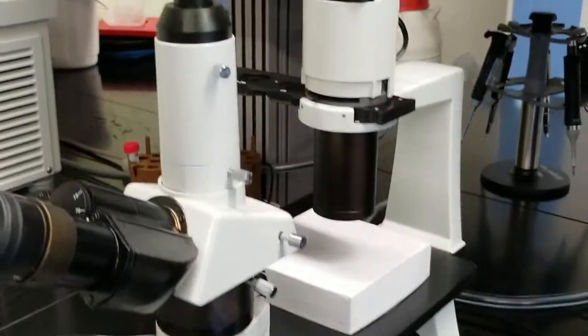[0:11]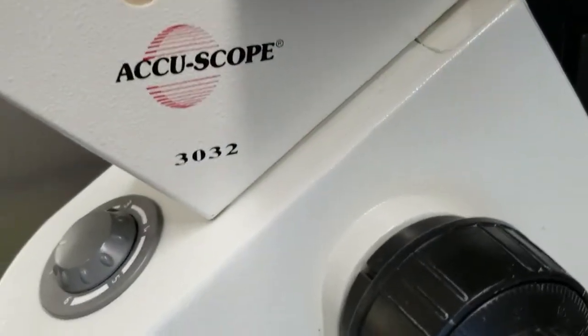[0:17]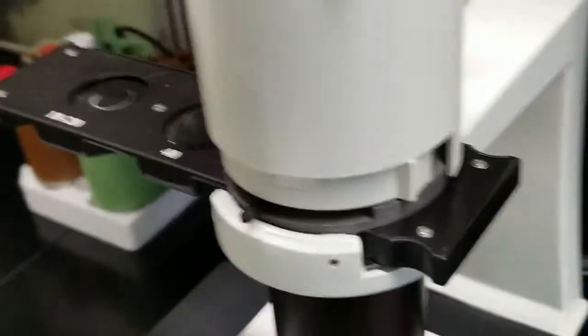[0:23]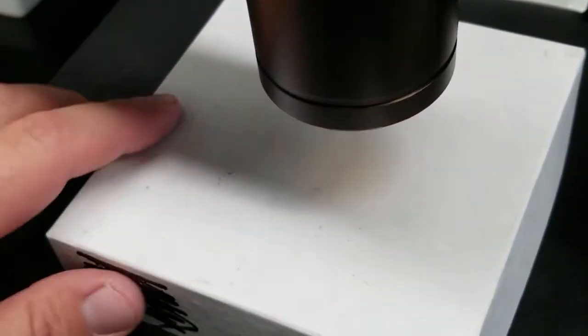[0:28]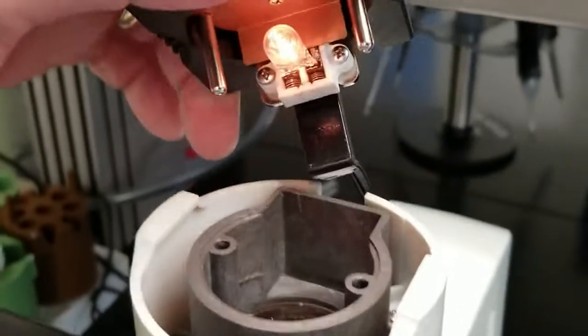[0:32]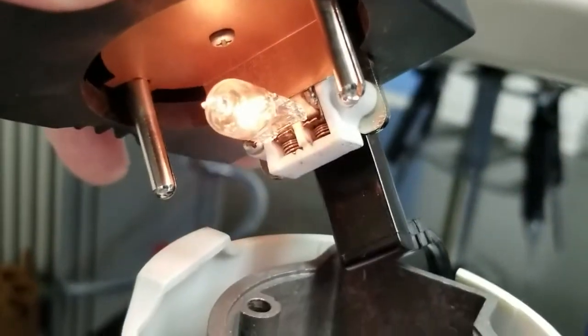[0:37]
We'll go ahead and turn it on so you can see how weak the halogen bulb is. That hasn't always been the case, but you can barely see any light shining on this white box right here. And we'll just open up the top here, just to show you how dull it is. That's what we're going to fix in this video, so let's get started.
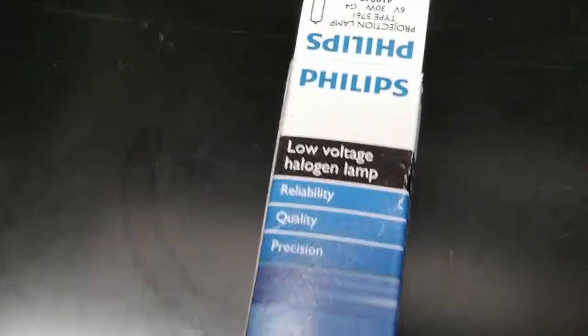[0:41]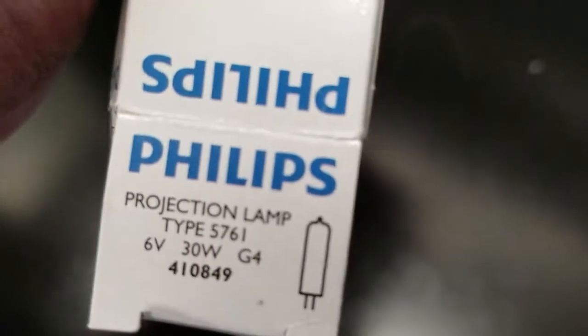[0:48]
I almost forgot, I want to show you the bulb that we're using in this microscope. It's the Philips brand 6-volt halogen bulb, and that's currently what's in the microscope, but let's go ahead and put that LED in there.
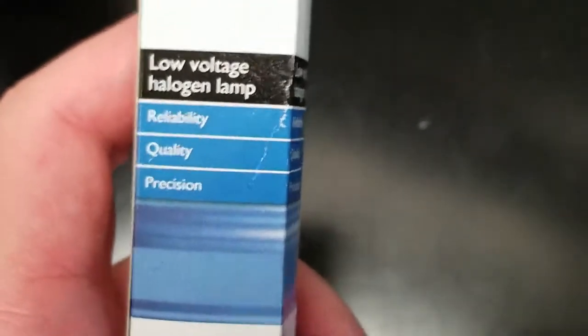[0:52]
This microscope has a halogen light bulb in the top of it. And as you know, halogen light bulbs get very hot. In fact, it was left on for a prolonged period of time, maybe overnight, I'm not sure, but it melted the components and even the soldering joints and the light housing up top. To make a long story short, it's not under warranty anymore. We're not shipping it back and paying for shipping and labor and a new light bulb.
We're going to fix it ourselves, and we're going to use a 12-volt LED light bulb with a 30,000 hour lamp life. And it's a pack of 10. We're going to try it out. It's low temperature. It's very bright, just as bright or brighter than a halogen bulb. So we're going to try it out and see what we can do on the cheap.
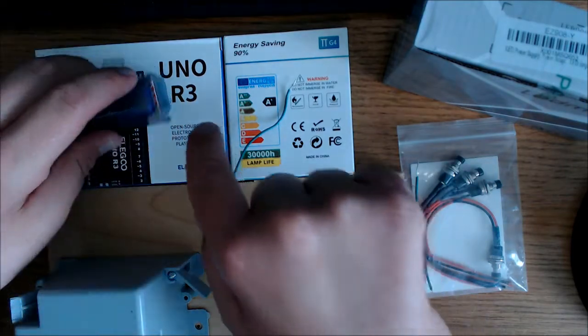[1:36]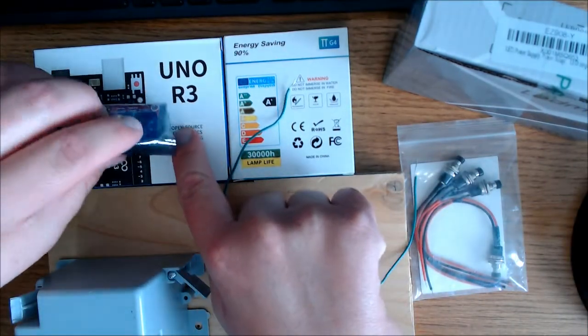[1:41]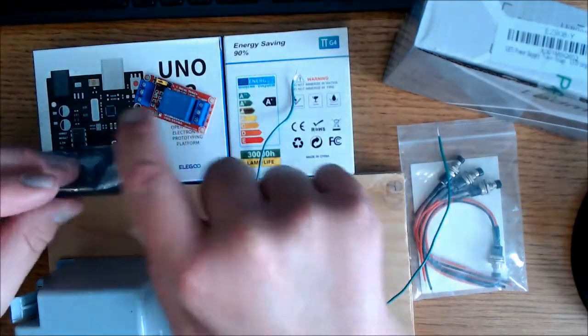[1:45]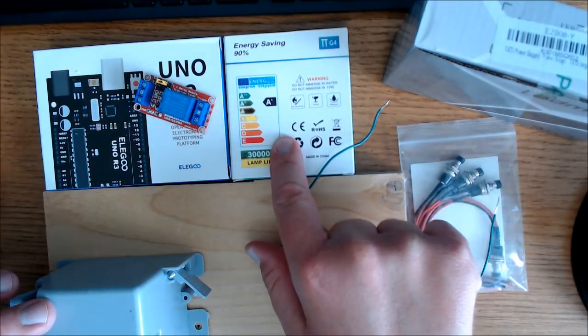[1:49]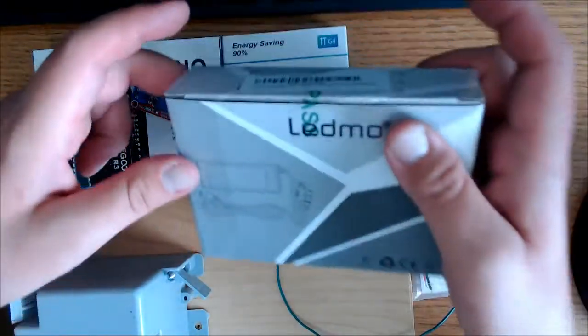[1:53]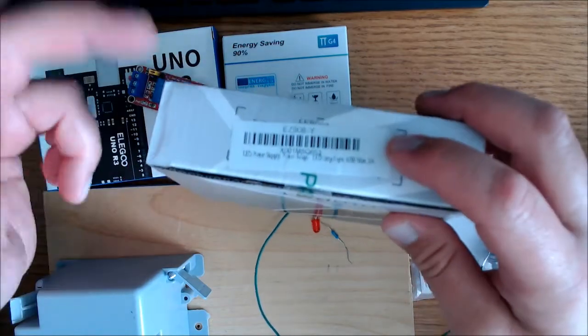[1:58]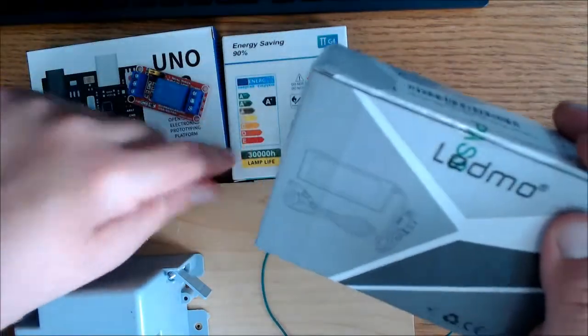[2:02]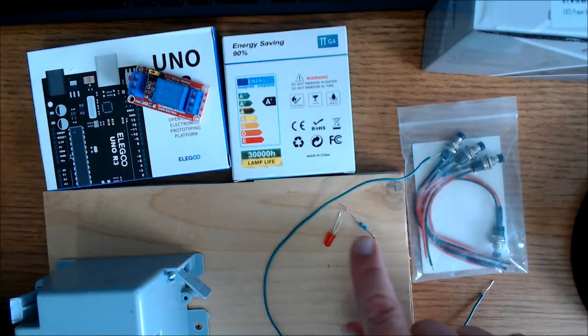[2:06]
In this project, we'll be using an Arduino Uno or Elegoo Uno. We'll be using a single channel 5-volt relay. I've used those before. And we'll be using 12-volt LED light bulbs. And we'll be using a 12-volt power supply, one that I can plug into the 120-volt wall outlet and then convert to 12-volt. It's pretty nice for my light. We'll be using a push-button switch and a 220-ohm resistor with an indicator light. That's just a red LED. And for the final project, connected to the Arduino, we'll be using 22-gauge copper wire.
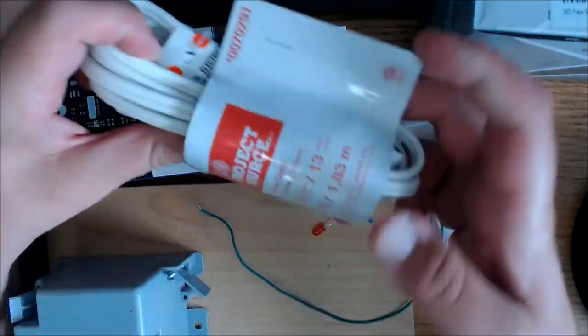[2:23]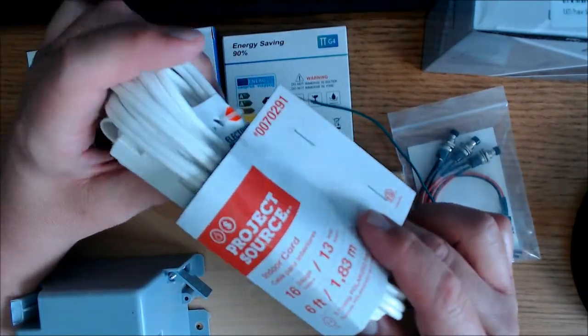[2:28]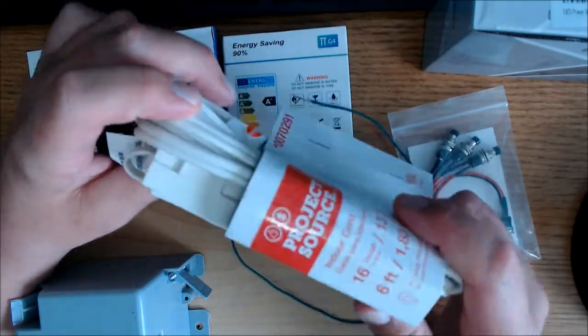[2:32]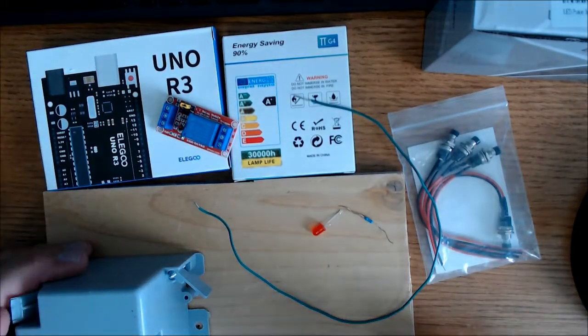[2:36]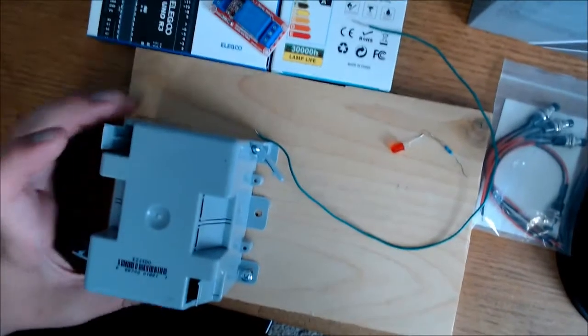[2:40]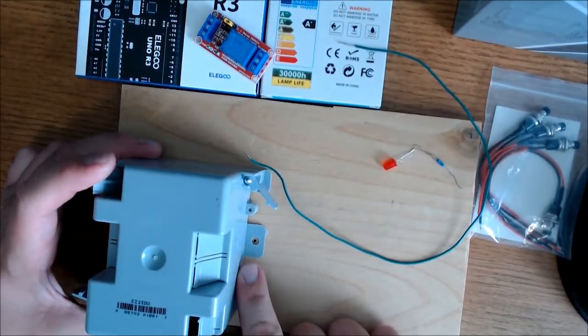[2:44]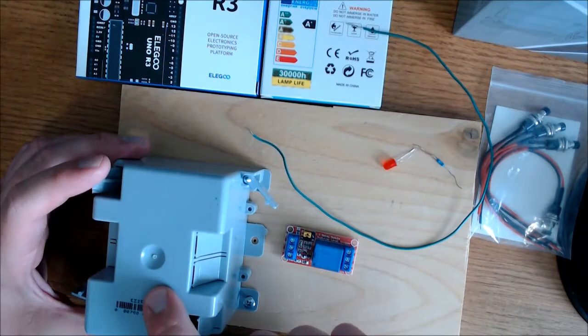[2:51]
We'll also be using this extension cord. This is just a regular extension cord that you can plug into a 120 outlet. We'll use that with the relay. And I'll mount this just on a piece of wood, like I normally do. And I'll be using this junction box right here. And I'll put this under the junction box just so no one gets hurt, no one touches it. This was pretty cheap. It was like $1.90 at Lowe's.
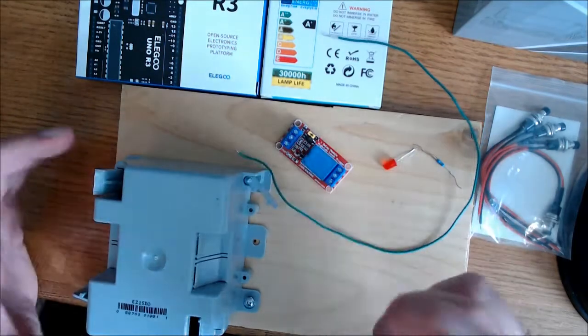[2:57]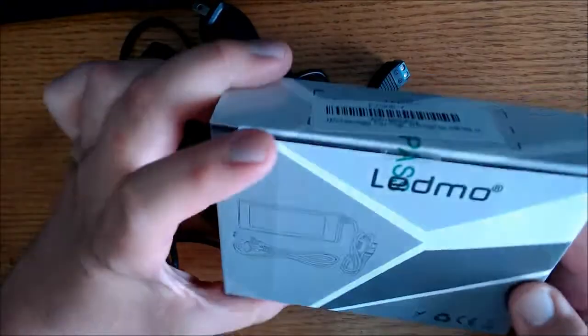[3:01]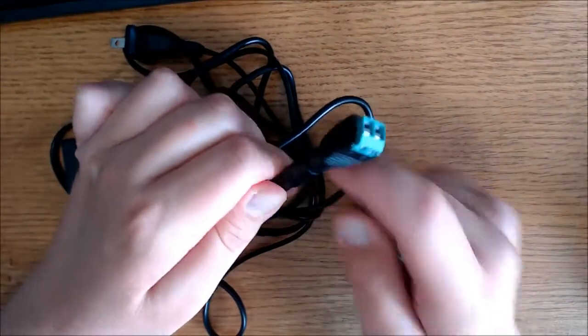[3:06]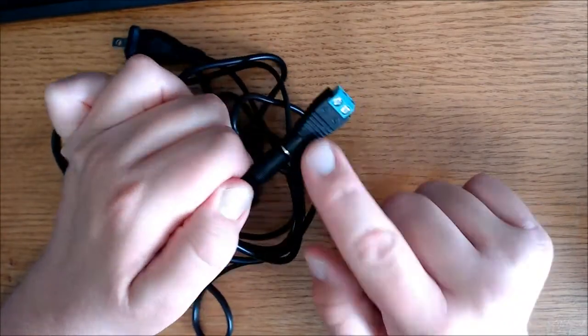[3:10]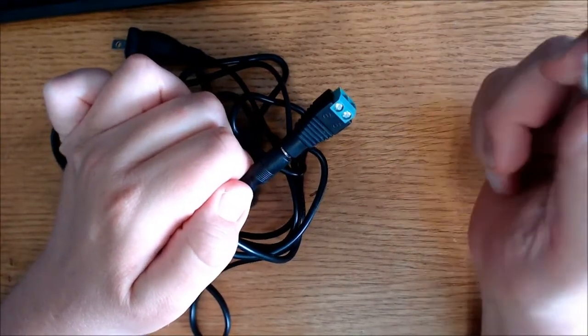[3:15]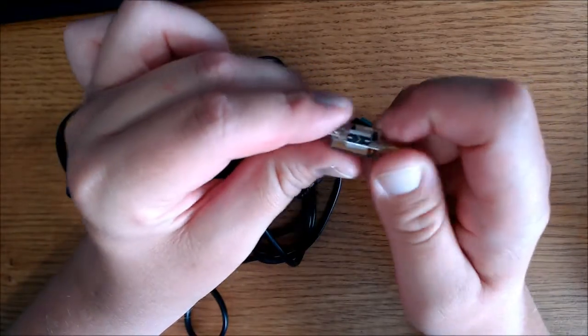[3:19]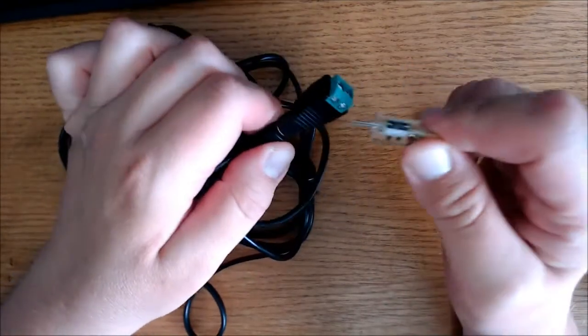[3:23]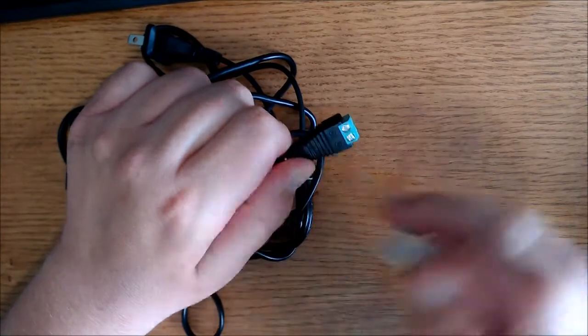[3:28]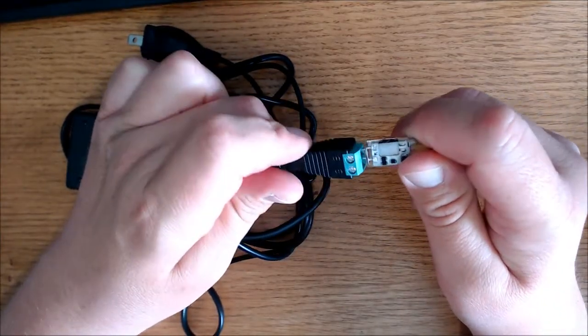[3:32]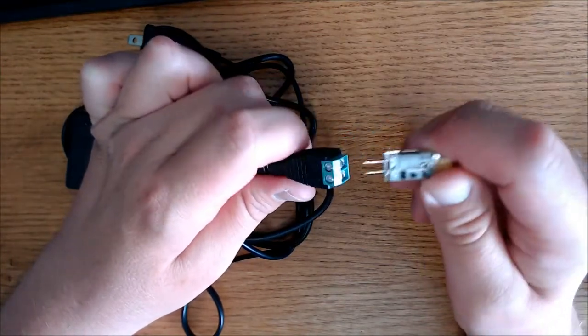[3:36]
Safety first, right? Anyway, I've never used one of these types of adapters before that I got online here, and the end of the adapter has a little port for the leads. And you just match up the polarity. This is my 12-volt LED light, and it tells you that it's negative right there, so that one's negative. You just match it up to the polarity on here. It says that this one right here is negative. You stick it in there and you screw it down and it'll clamp it in there. That is pretty easy. That'll be very easy to remove and replace. So I like that. It's very nice.
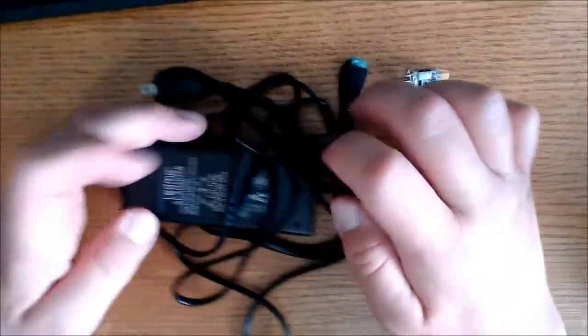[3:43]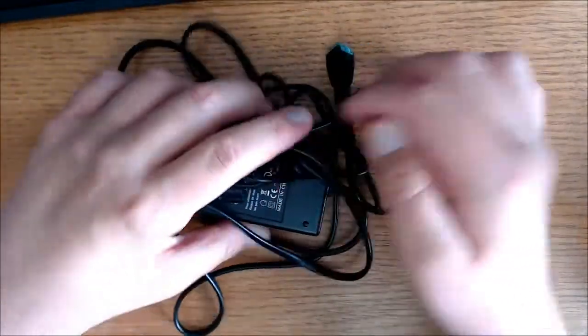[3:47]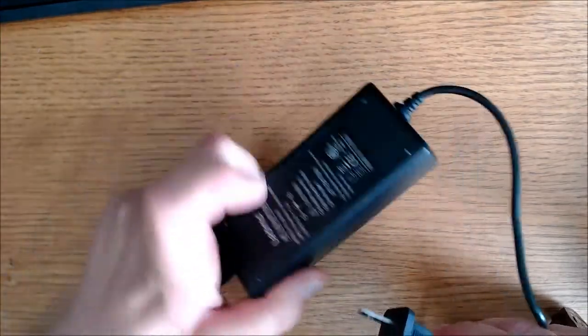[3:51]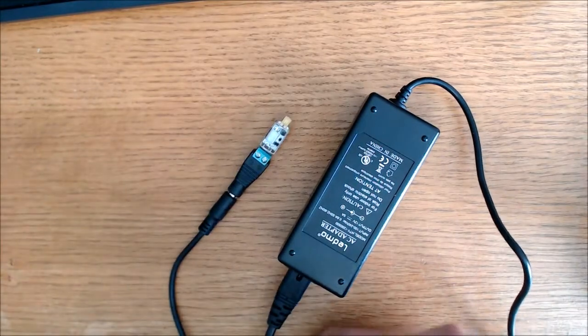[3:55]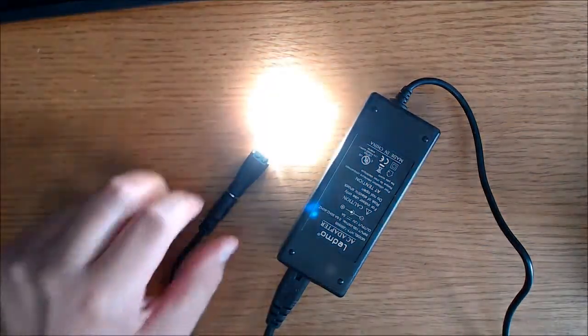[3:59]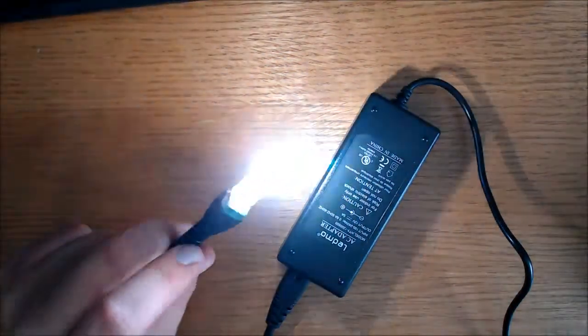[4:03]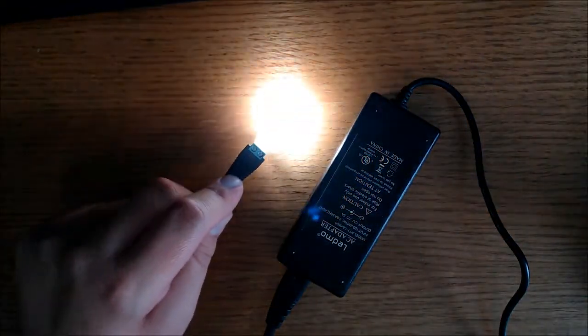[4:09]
And like I said, you plug this end into the 120 outlet and it converts it to 12 volts. There's no on-off switch with this. So you just plug it in and the light comes on, so that's what we'll do here. Just plug it in, just see how bright it is. That's very bright. That will work nicely. I don't think the camera does it any justice, but it is very bright.
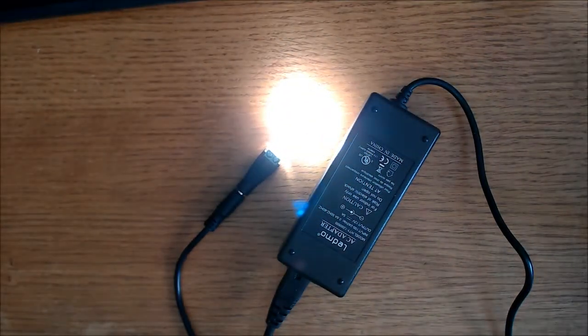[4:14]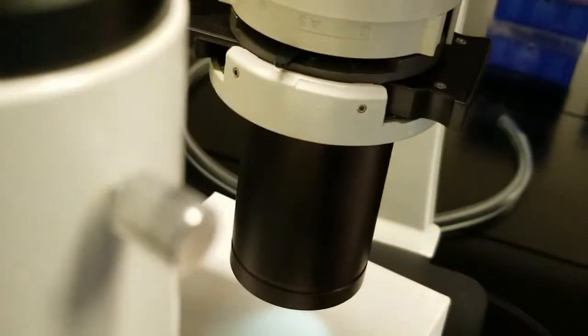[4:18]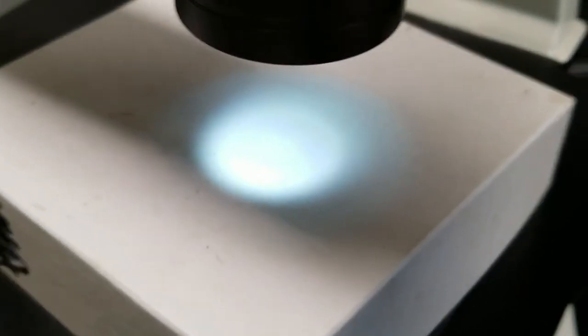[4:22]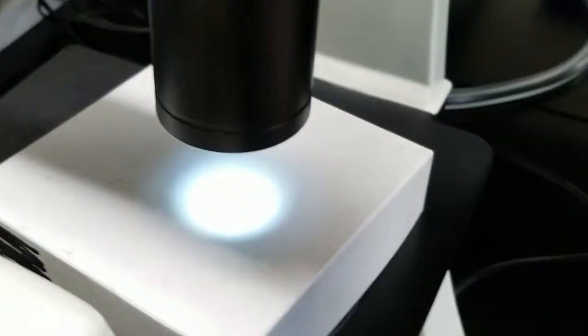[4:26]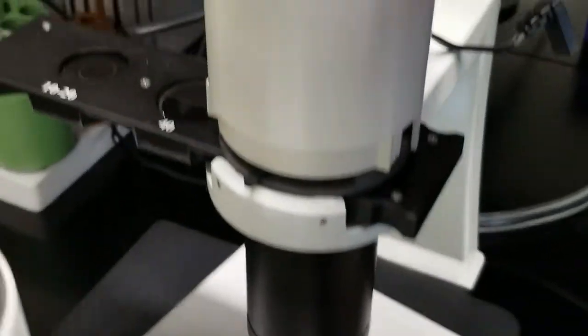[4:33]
I wanted to go ahead and see if this light was going to be bright enough for this microscope. So I went ahead and put it in the top here. You can immediately tell that circle there is way brighter than the halogen bulb was before. We're going to put it in the top of the microscope, and we'll put a temporary cover on the top. Ideally, we'd want to 3D print a cover to go over that and hold the light, but we'll make do with something temporary. I think this is going to be a great fit.
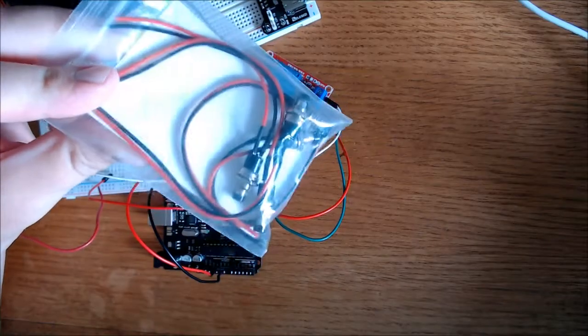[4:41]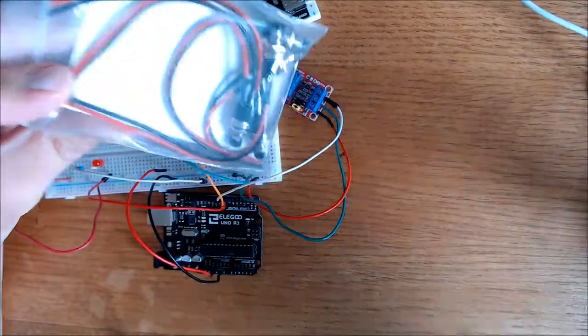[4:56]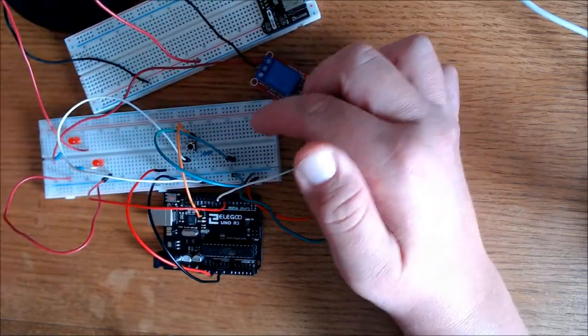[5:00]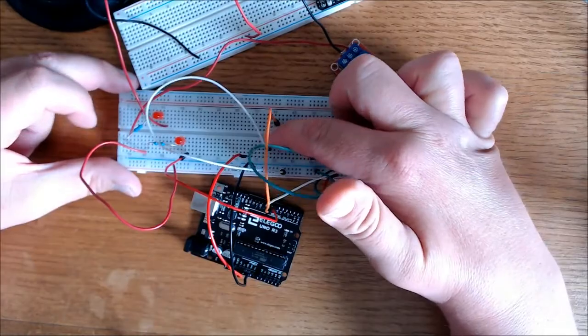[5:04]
Well, it turns out these switches didn't work for me at all. If you look on here, it says that they are normally open, and they aren't. In fact, they're normally closed, because the only way I could turn the light off was to depress the button. So these were not working for me, and I had to resort to one of these micro push buttons here, as you can see.
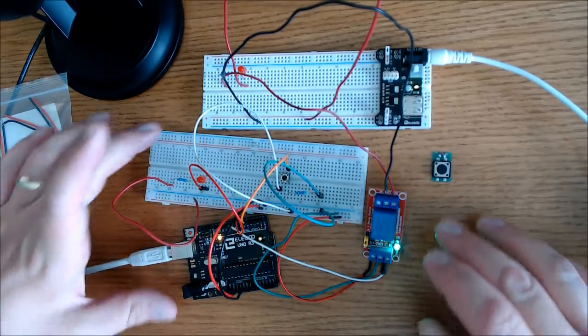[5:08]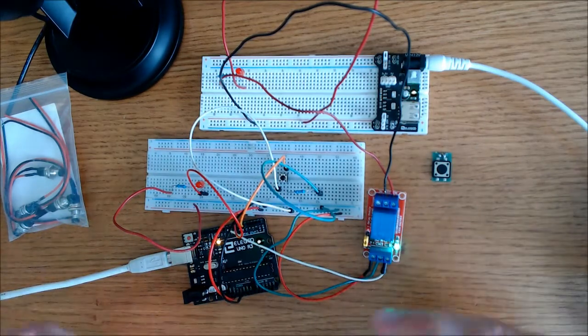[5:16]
Before I actually put this in place on a platform and start screwing things in and soldering to permanently put it in place, I wanted to go ahead and get a prototype to make sure that it worked first. So what we've got here is exactly what we'll see for our final product, except I'm using a red LED and a 220 ohm resistor up here in place of the 12 volt LED that'll be going into the microscope.
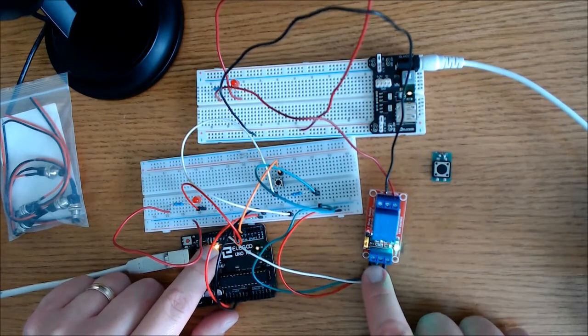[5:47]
So on the Arduino side of our 5 volt relay, we have the IN port right here, which is our relay port, and it is directly connected to pin 8 on the Uno board. We have the positive and negative ports here on the relay on the Arduino side, and it is directly connected to my positive and negative rails right here, which is connected directly to the 5 volt and ground port of the Uno board.
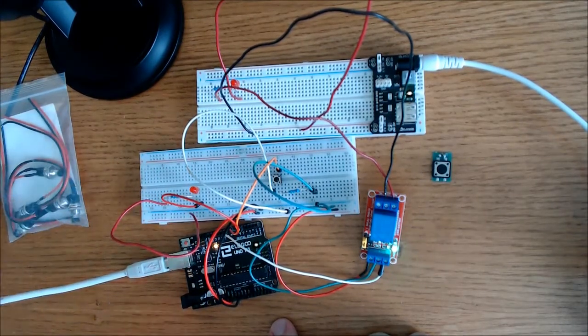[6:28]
Now here we have an LED. This is going to be my indicator light, because if this light is on, I want to be able to see it, and I'll know that the LED light is on in the microscope. Because if you're standing right next to the microscope, you may not know that that light is on, but if you see this light, that's a good indication. It should tell you that the LED is on, so you can turn it off, and we won't have people leaving the microscope on all night long again.
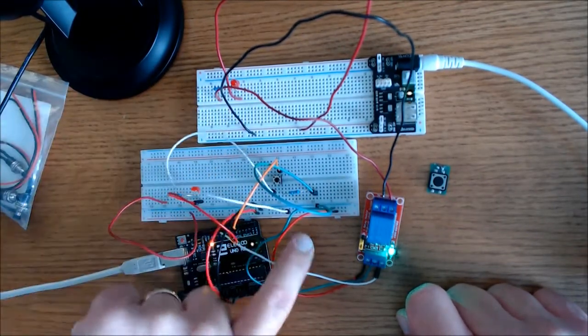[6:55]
So this light here is connected, the positive leg is connected directly to pin 6 on the Uno board. Now the negative leg is connected to a 220 ohm resistor and then to the ground rail right here. For this button, I have the top right pin connected directly to pin 4, and I have the bottom left pin of this button connected to the 5 volt rail right here. Now the bottom right pin is connected to a pull down resistor to keep the button low. It's a 10k ohm resistor, and on the other side of that I have that connected to the ground rail. And that is my connection on this side, the Arduino side of the 5 volt relay.
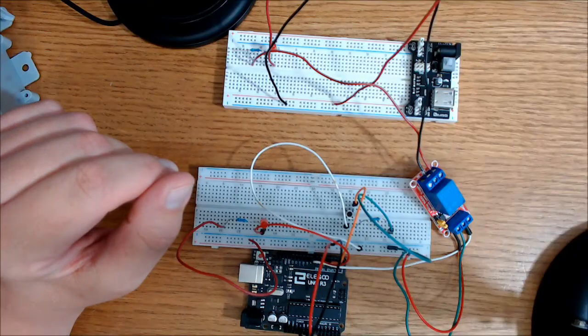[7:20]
I wouldn't focus too much on this side of the relay because it doesn't look exactly like it will with the final product. For instance, you don't see a 12 volt adapter here, and you don't see a 12 volt LED.
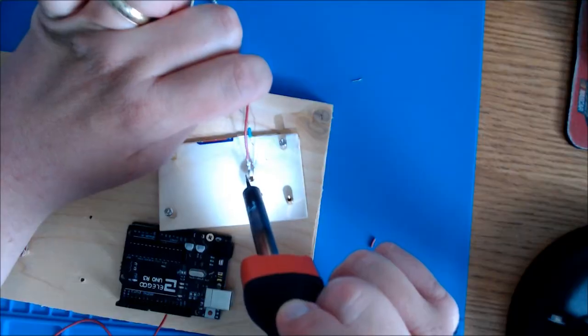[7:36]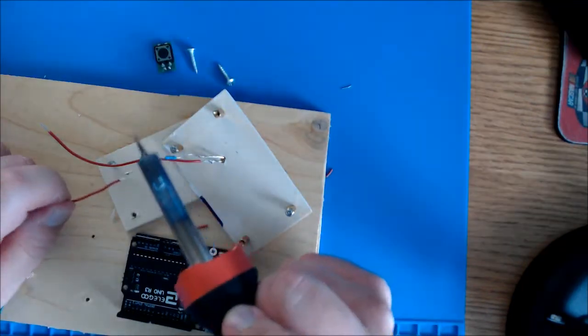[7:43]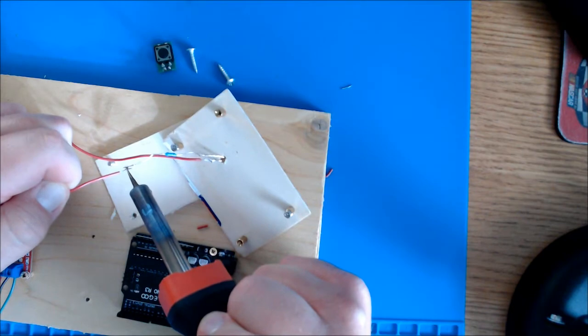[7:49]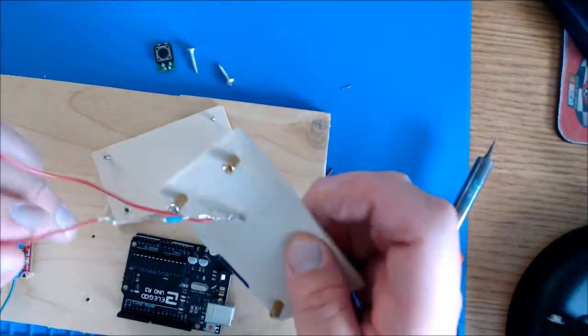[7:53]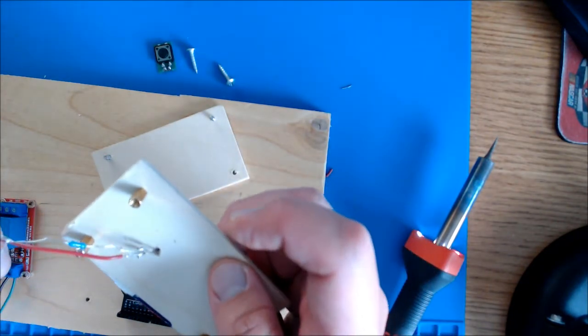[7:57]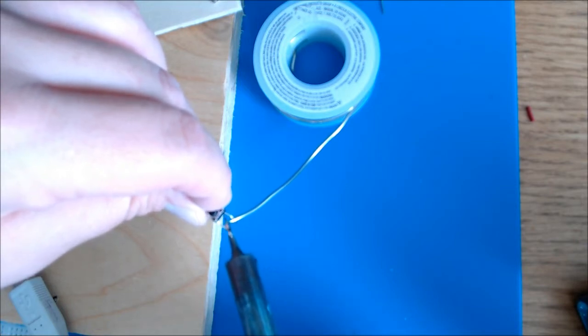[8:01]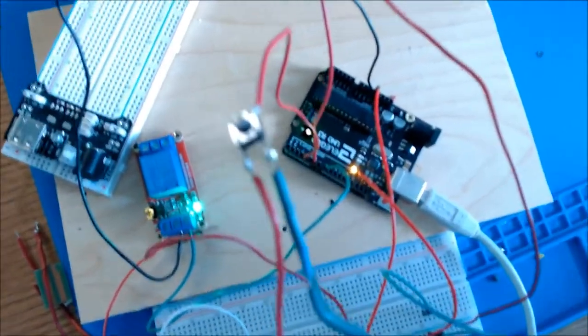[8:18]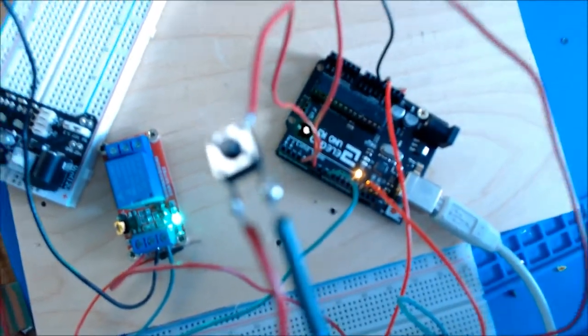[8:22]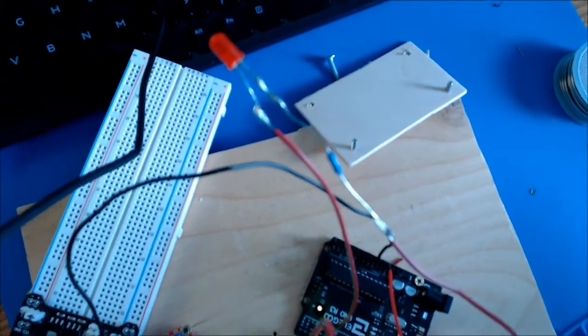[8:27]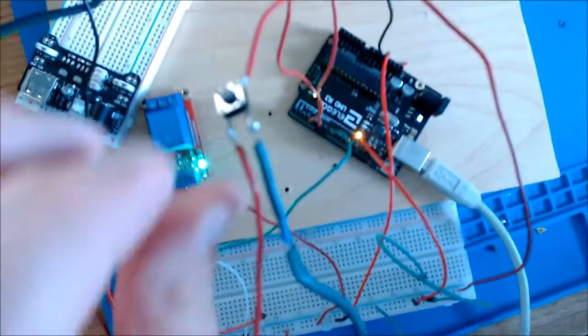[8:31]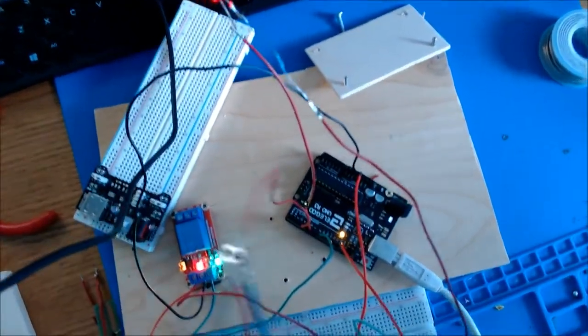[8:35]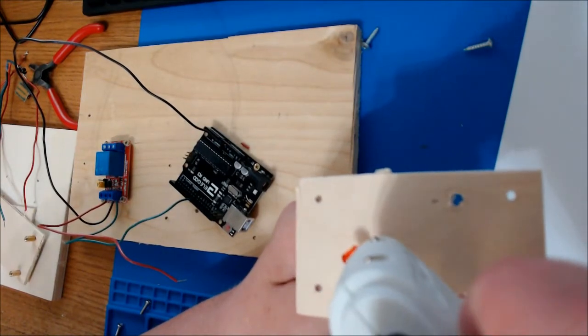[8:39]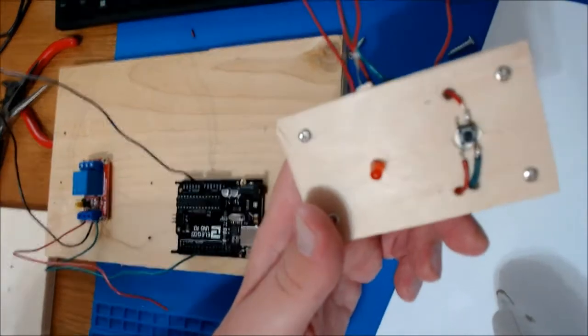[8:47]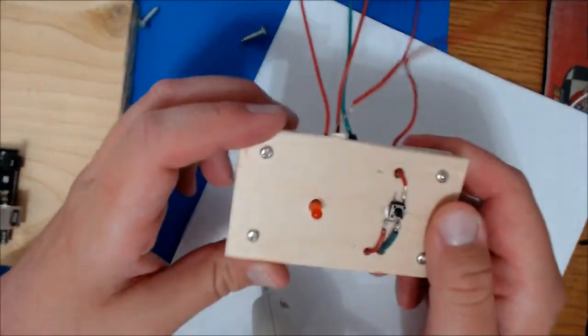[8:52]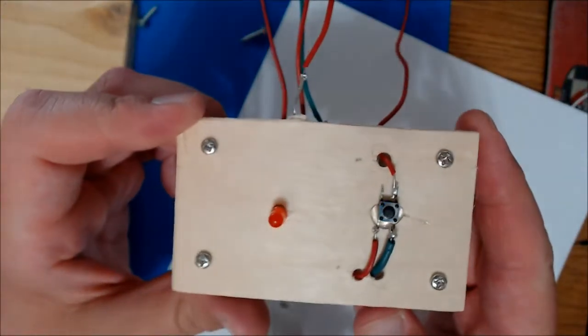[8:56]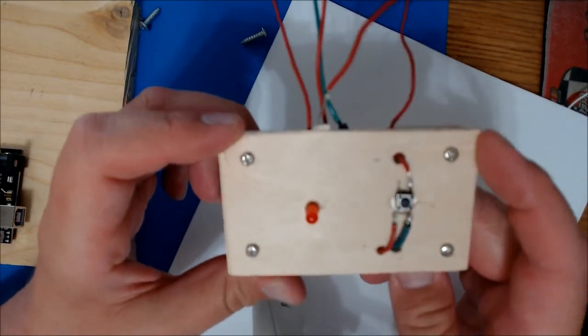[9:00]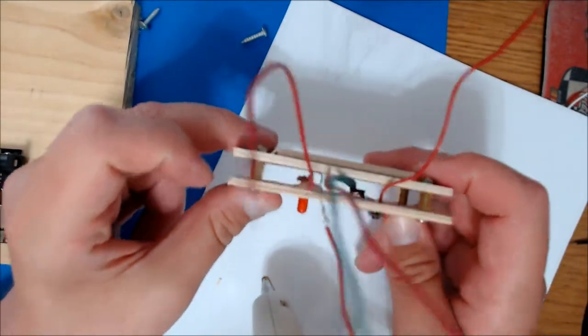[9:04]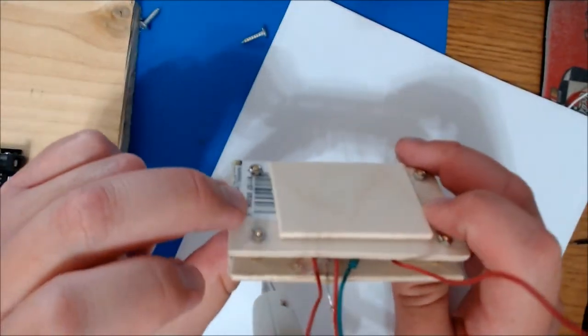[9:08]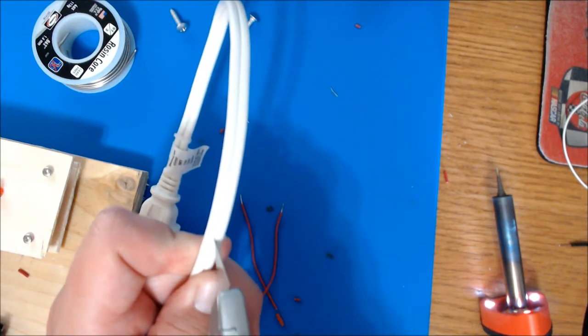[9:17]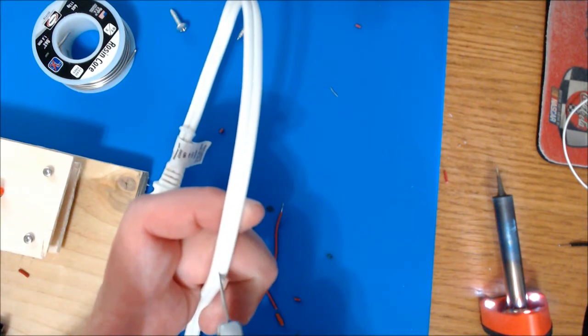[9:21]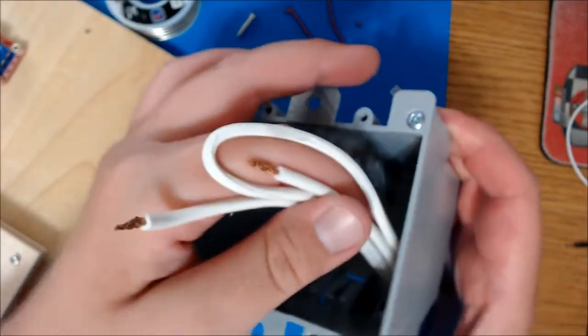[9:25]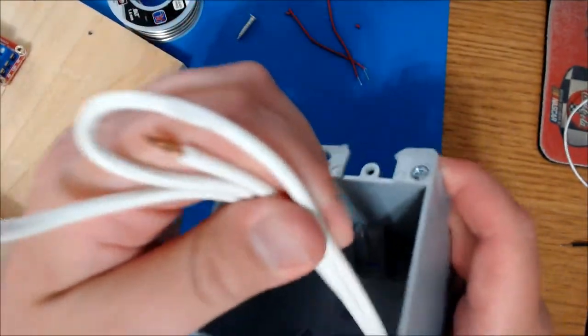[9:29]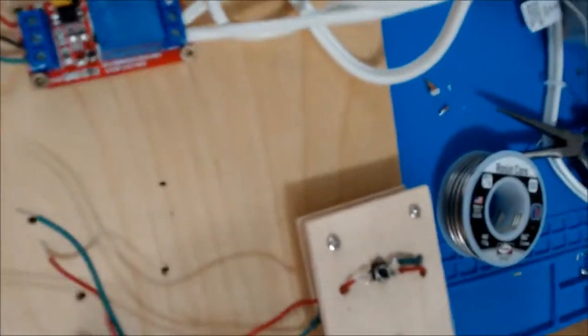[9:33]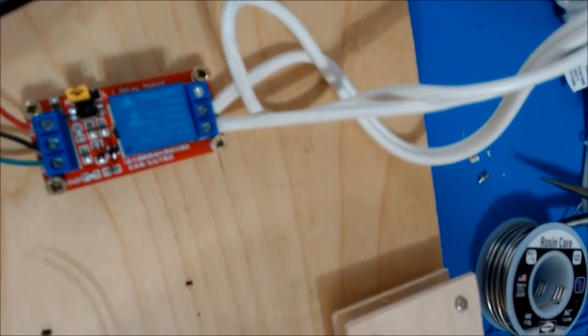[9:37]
I'm going to use a two-prong extension cord to connect the relay to the wall, and because it has a little score here in the middle, I'm just going to cut that open, separate the two wires, and I'll cut the positive wire in half. I'll insert one end of the positive wire into the common and the other end of the positive wire into the normally open port. It can be frustrating inserting stranded wire into the ports of a relay. The easiest way to do it is to insert it when it is freshly cut, and the strands are still straight and not bent.
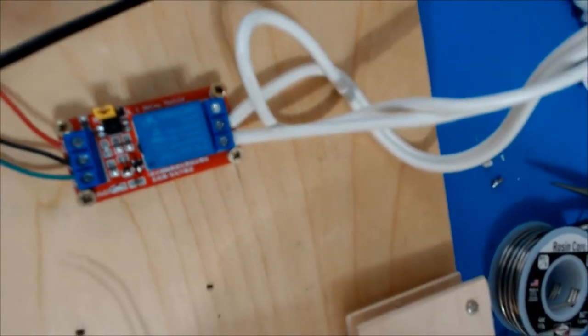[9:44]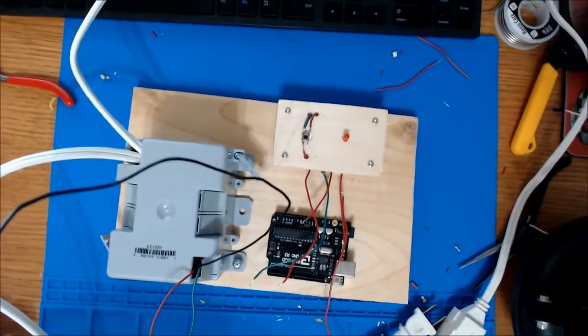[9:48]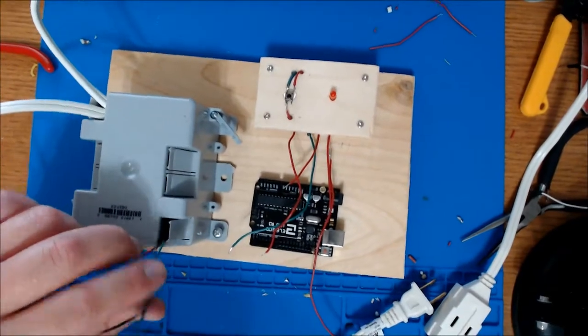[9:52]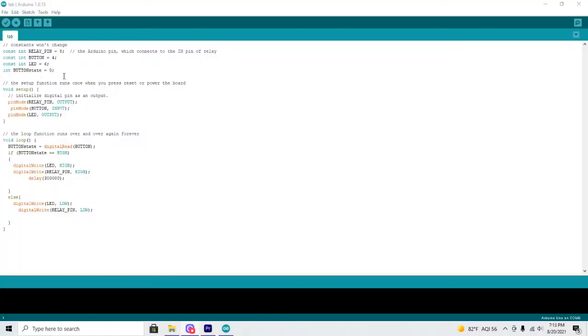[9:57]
Here is the code for this project. We go ahead up here at the top and include some constants. The relay pin is pin 8, the button pin is pin 4, and the LED is pin 6. We also create a button state integer equal to 0. Down here at the setup, we will call the relay pin and the LED pin outputs, while we call the button pin an input. And down here in the loop section, we get the button state.
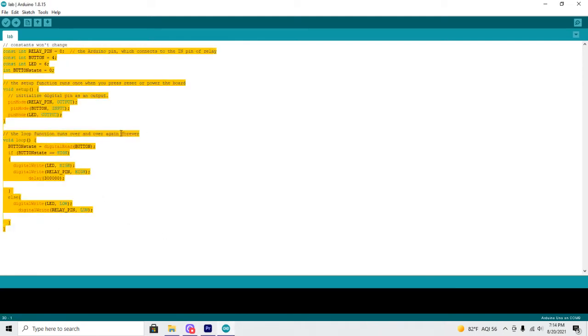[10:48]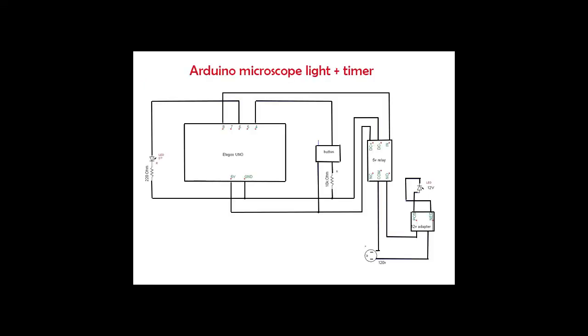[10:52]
When the button state is high, so when the button is pressed, the LED and the relay pin go high, and that will turn the light on for 300,000 milliseconds, which is 5 minutes. And when the LED and the relay pin are not high, they are off. So this one's pretty simple, pretty short, and easy to do. Here is the schematic in case you had any questions about the connections.
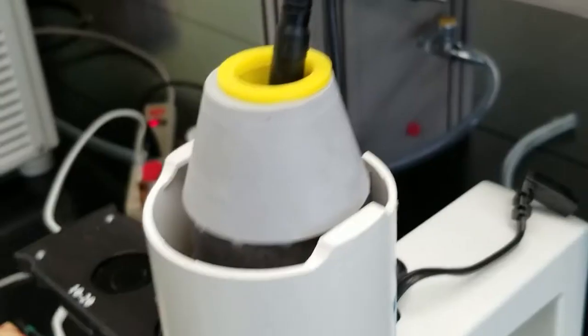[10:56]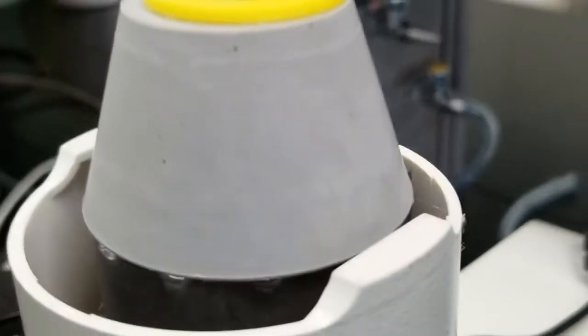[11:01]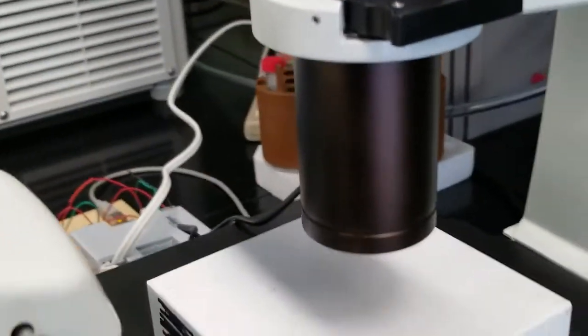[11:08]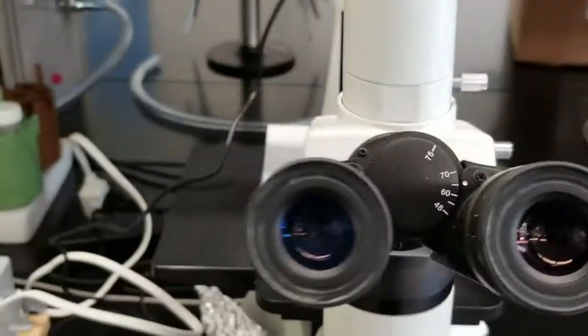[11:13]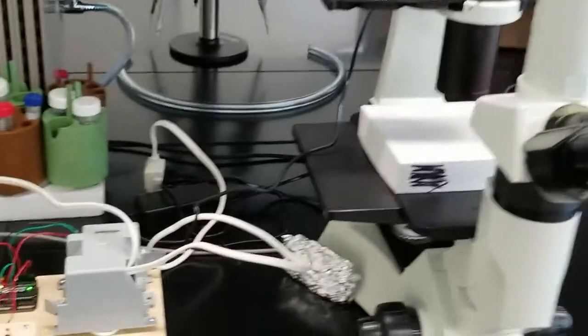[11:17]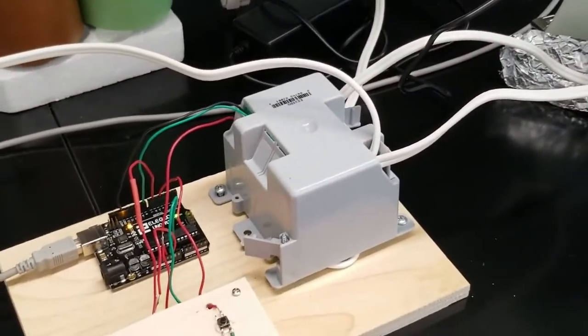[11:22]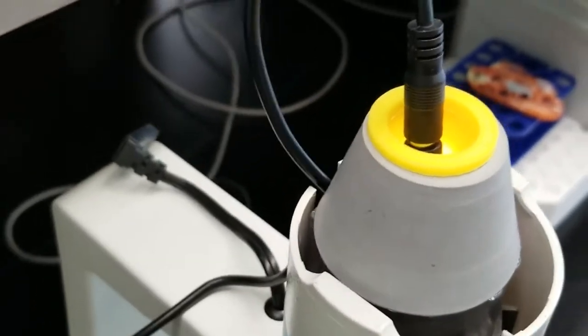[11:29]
This turned out to be a really good fix for the AccuScope 3032. If you work in a research lab, you know that repairing equipment can be pricey. I invested a fraction of what it would cost to ship this back to the vendor for repairs, and I didn't alter the microscope in any way. I could remove this and put the original housing on tomorrow. So the light comes on with the push of a button, and it'll go off in 5 minutes, but you can also manually turn it off by pressing the reset button that's located in the corner of your Uno board.
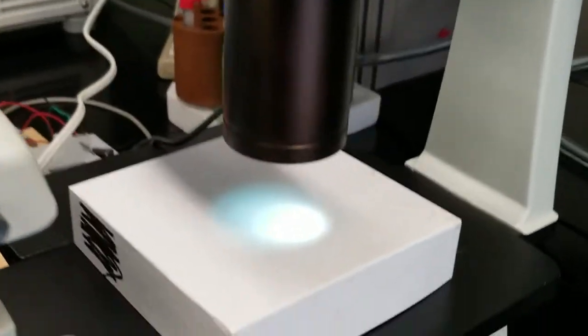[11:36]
Well, I hope this video was helpful, and at the very least, I hope that it gave you some ideas for a project that you could do.